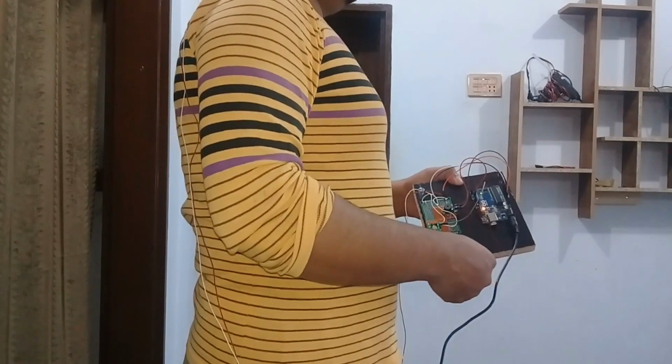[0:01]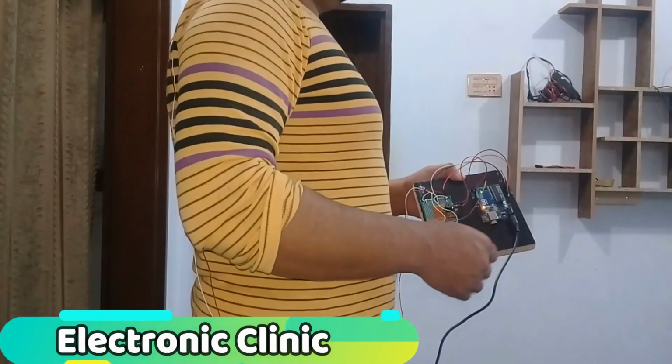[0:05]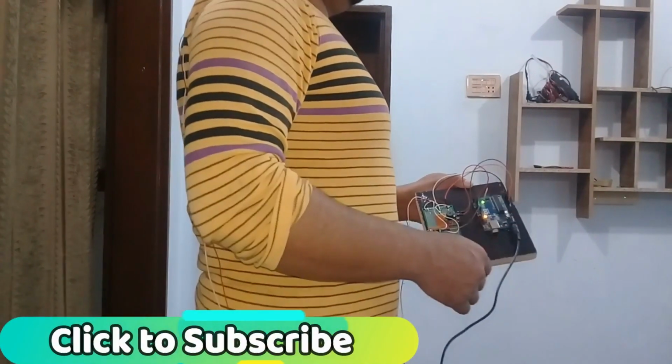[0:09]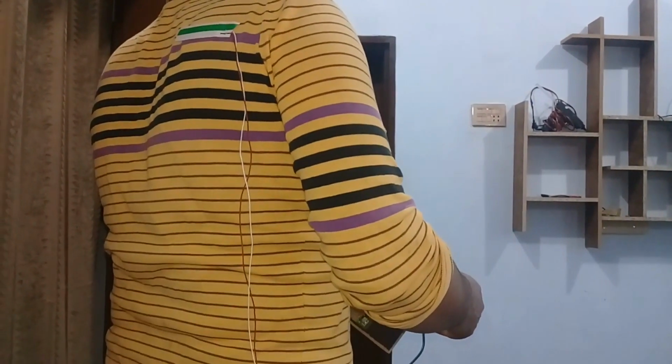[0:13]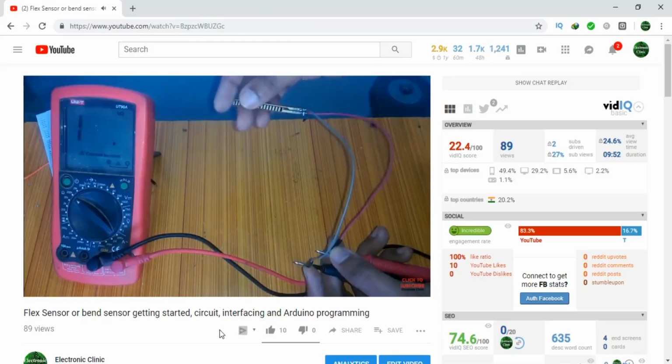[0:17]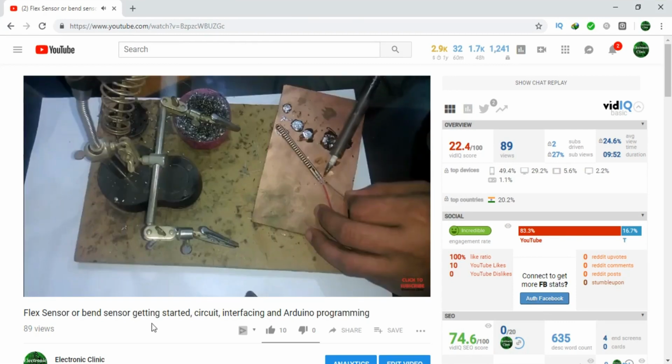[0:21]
Today's episode is about human posture monitoring using a flex sensor or bend sensor with Arduino. Before you watch this tutorial, I recommend you first watch my previous tutorial on flex sensor or bend sensor getting started. This tutorial completely explains all the basics related to a flex sensor. The link is given in the description.
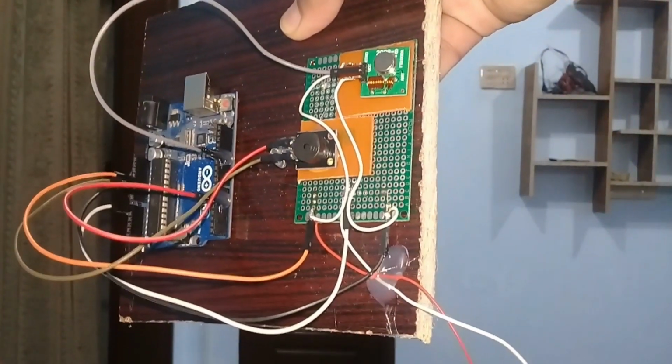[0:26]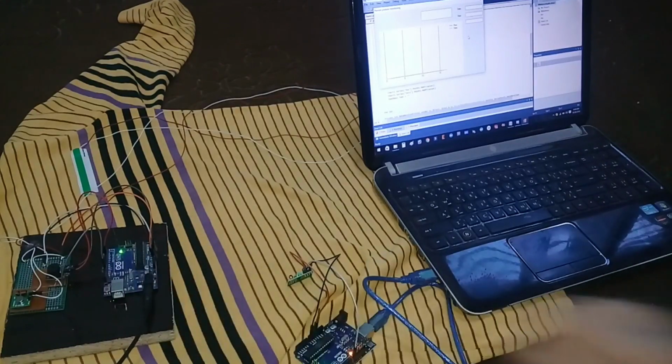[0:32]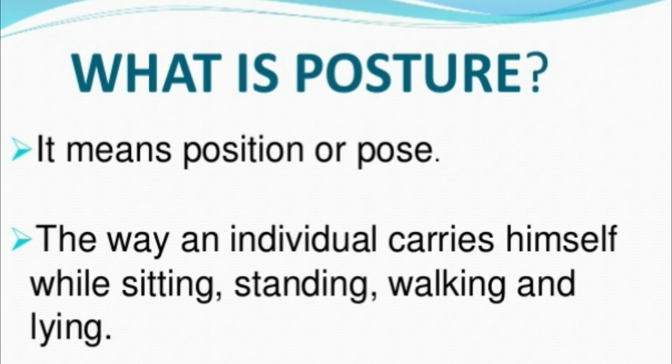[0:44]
As this is my first tutorial on human posture monitoring, I'm going to call this version 1. In version 2 of human posture monitoring, I will make use of wireless communication to send the posture data to a computer application where it can be displayed on a chart for post analysis. Let's get started. Let's start with a question.
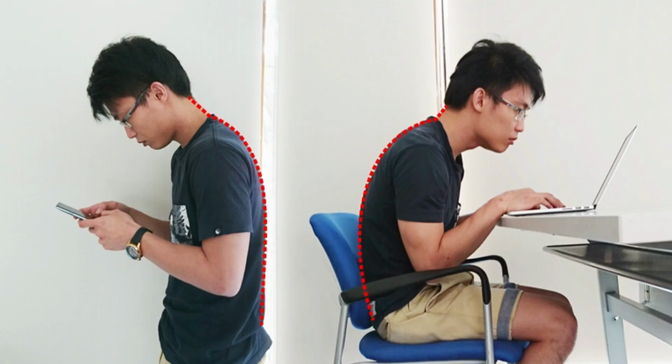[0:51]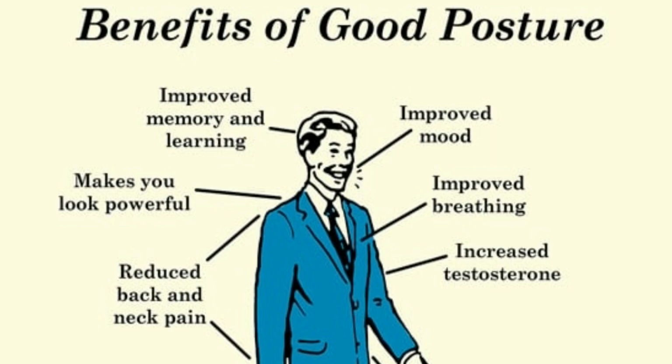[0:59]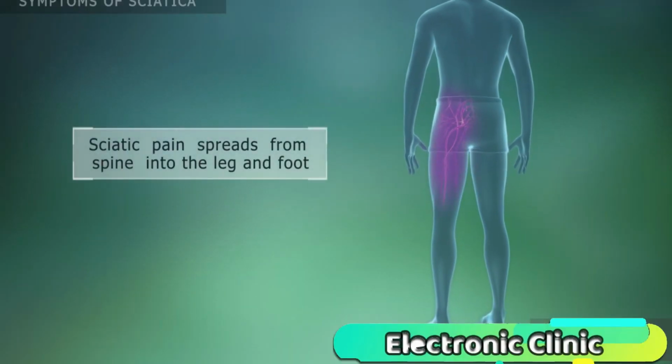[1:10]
What is posture? Posture is not a position but a dynamic pattern of reflexes, habits and adaptive responses to anything that resists you being more or less upright and functional. Forward head and flat back is a poor posture. Forward head, sway back and rounded shoulders is of course a poor posture. A poor posture soon results in sciatica problems.
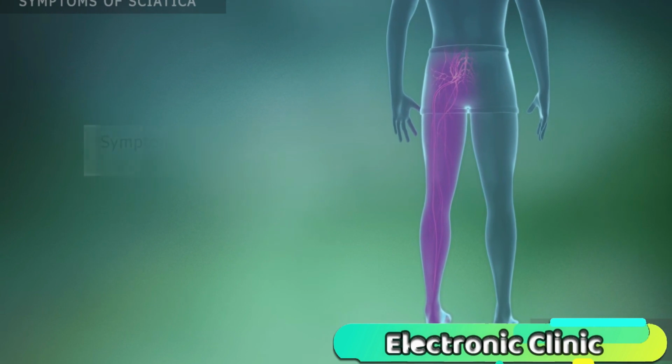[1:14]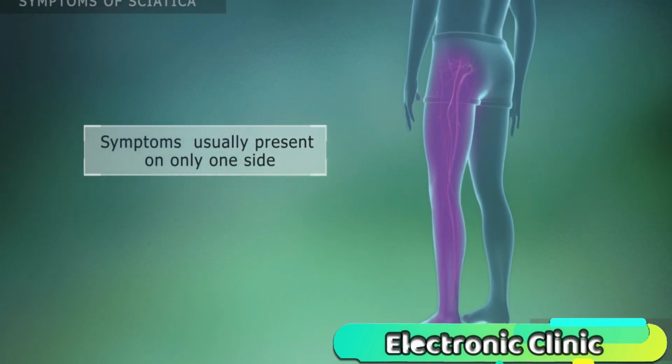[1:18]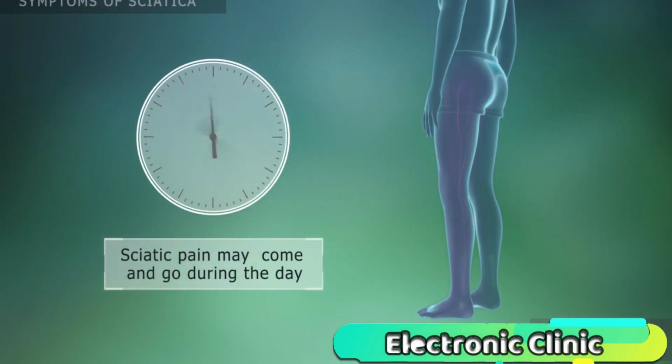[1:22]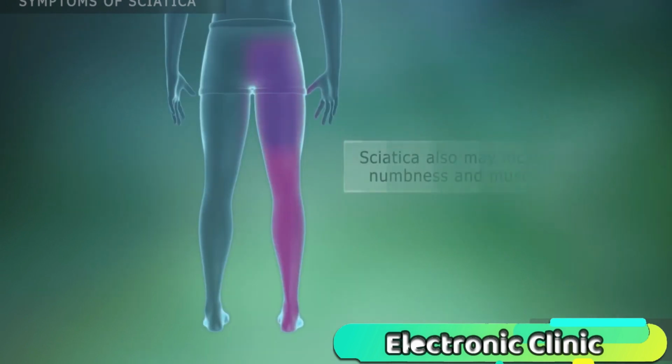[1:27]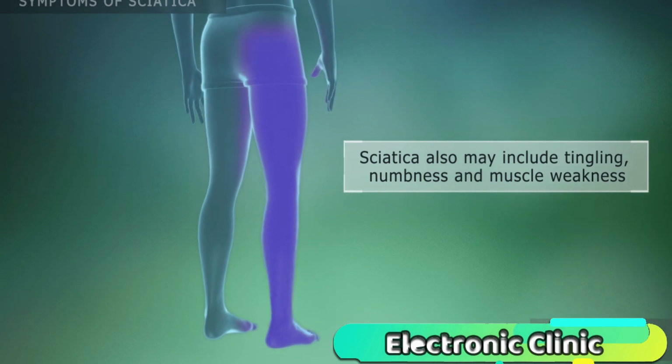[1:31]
Sciatica is a term that describes symptoms of pain, numbness and weakness that radiate along the sciatic nerve from the lower back to the buttocks and the leg. Most commonly, sciatica is caused by a disc problem such as a herniated disc that is pressing against a nerve root.
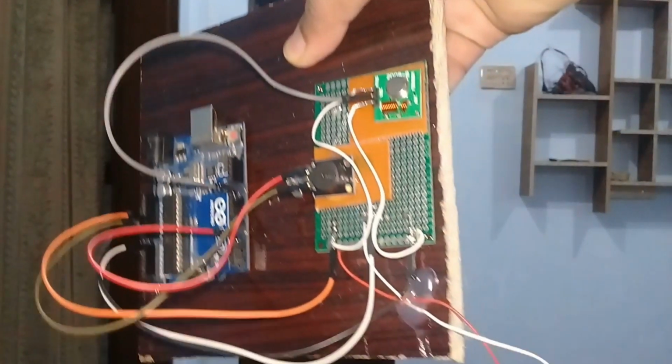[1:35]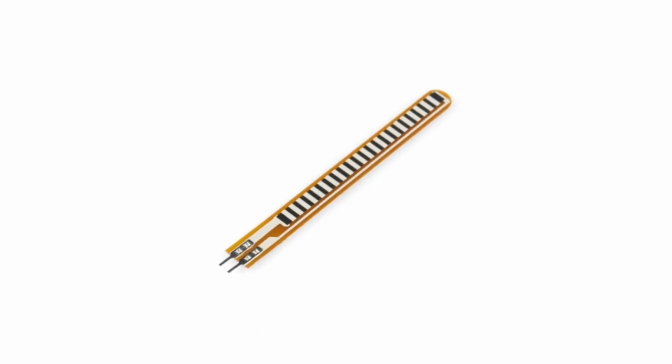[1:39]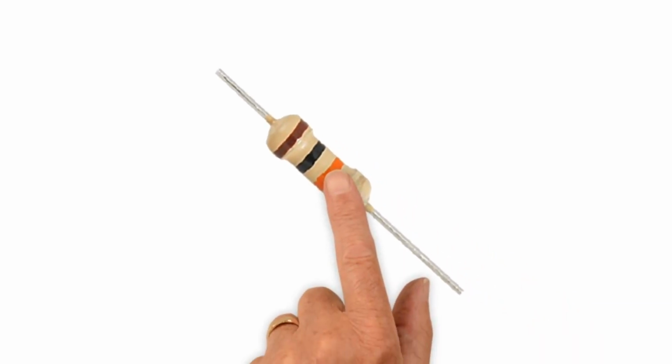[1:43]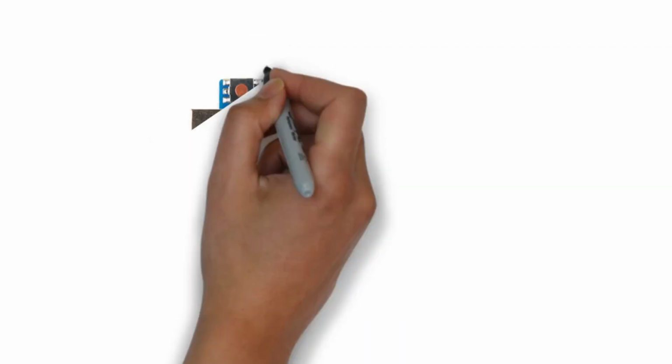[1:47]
The components that we will need for this project are number 1, flex sensor, number 2, 5 volt buzzer, number 3, 10K resistor, number 4, jumper wires, and finally number 5, Arduino. These components can be purchased from Amazon. The component purchase links are given in the description.
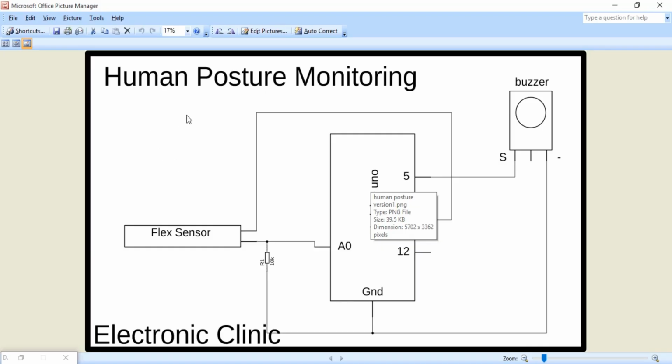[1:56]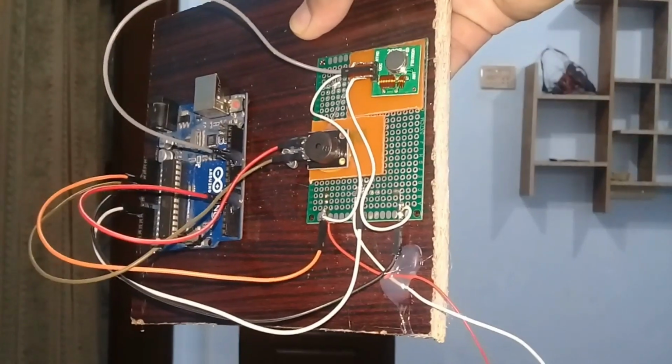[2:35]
The flex sensor connection with Arduino is exactly the same as explained in my previous tutorial. As you can see, a 10K resistor is connected in series with a flex sensor. 5 volts from Arduino is connected with the flex sensor and ground is connected with the 10K resistor. This flex sensor and 10K resistor make a voltage divider. A wire from the middle is connected with the analog pin A0 of the Arduino. The buzzer's S pin is connected with pin number 5 of the Arduino, which is a PWM pin, and the minus pin is connected with the ground. This is the final circuit.
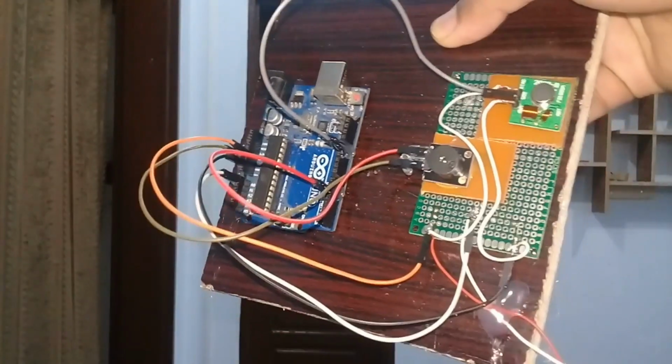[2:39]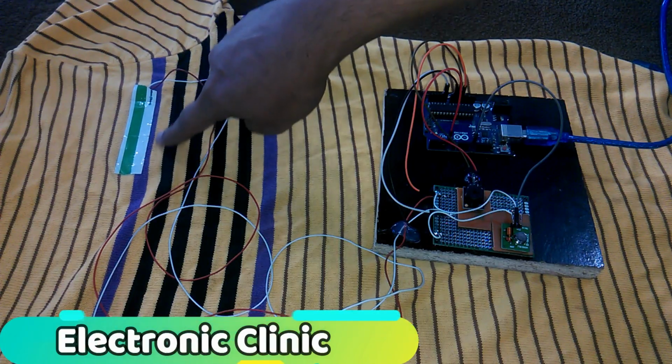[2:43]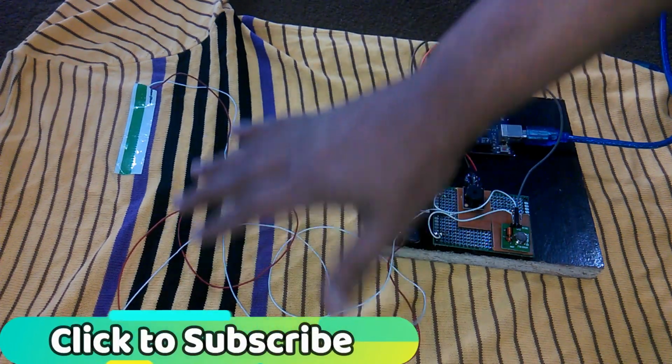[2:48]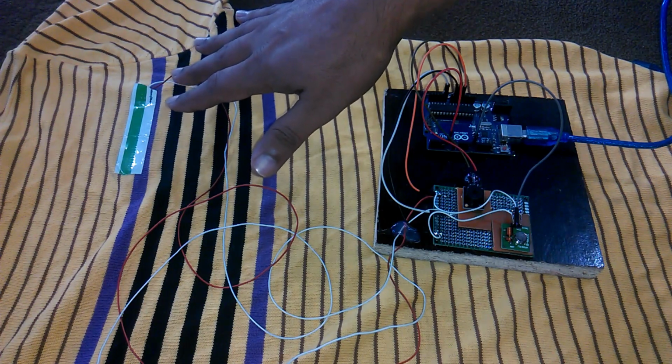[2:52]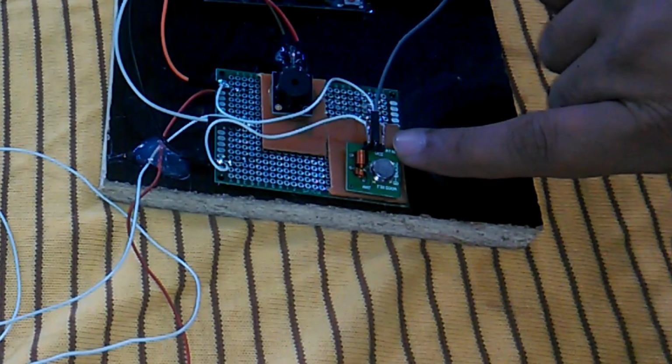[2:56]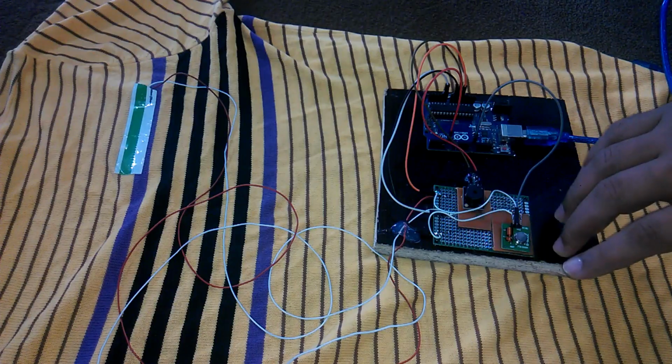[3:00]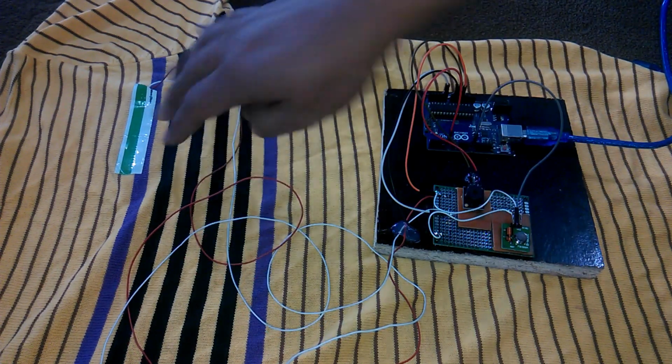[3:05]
I skipped the soldering part as I covered this in my previous tutorial. This is the same flex sensor, but this time I soldered longer wires and I used sticky tape to fix this flex sensor on the t-shirt. As you can see, I have also connected a radio frequency RF transmitter module. I will explain this in version 2. In version 1 of human posture monitoring, we will be using only the flex sensor and a buzzer.
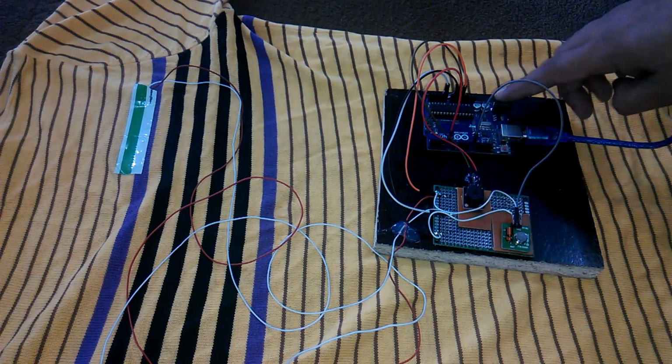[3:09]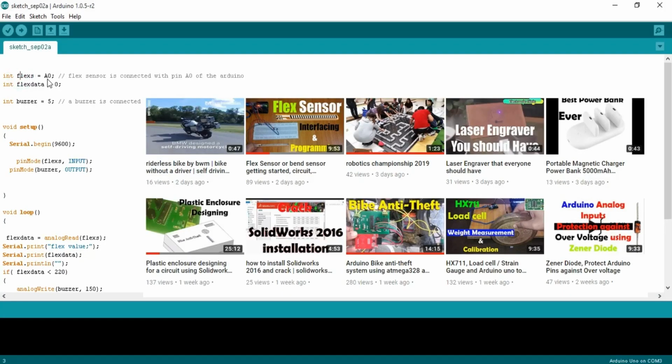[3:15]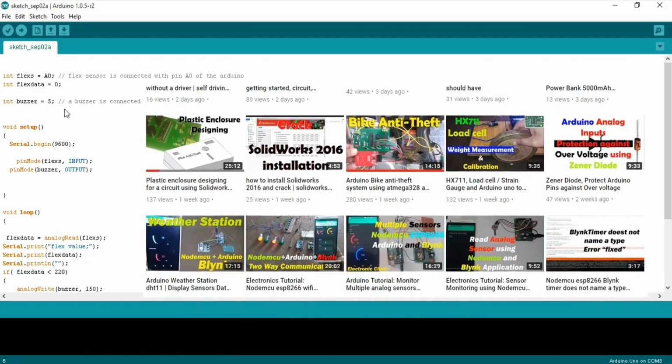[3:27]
The whole circuit can be powered up using a 9 volt battery, but I will be using a 12 volt adapter for the testing. Integer flex is equal to A0. The flex sensor is connected with pin A0 of the Arduino. Integer flex data is equal to 0. Integer buzzer is equal to 5. A buzzer is connected with pin 5 of Arduino, which is a PWM pin.
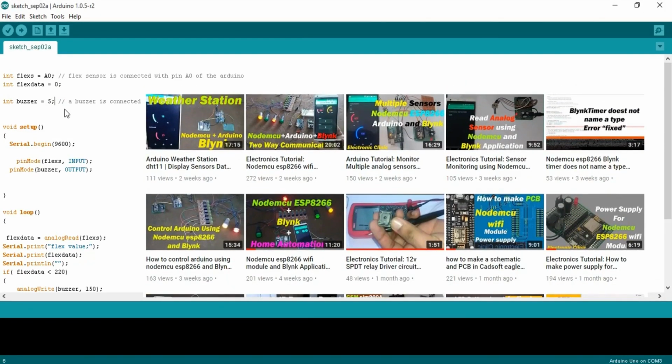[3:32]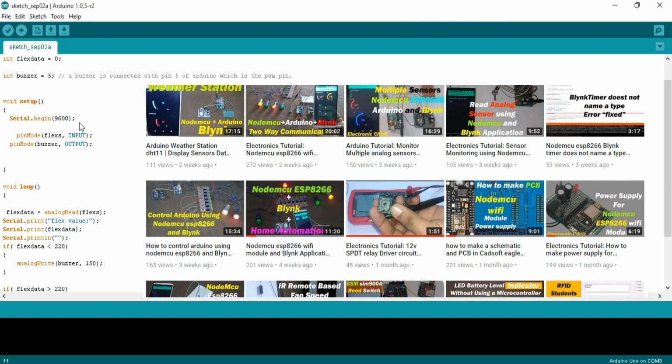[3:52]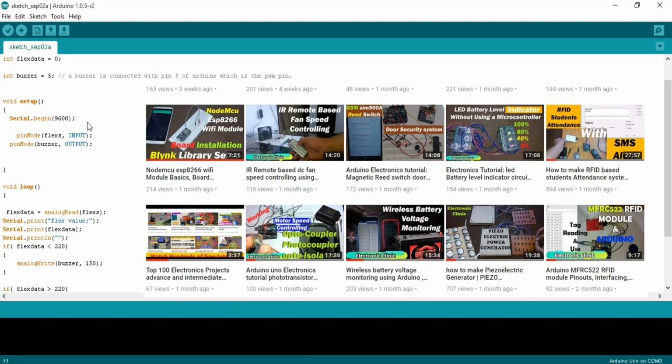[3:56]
As you know, my friends, every Arduino program has at least two functions, which are the void setup and void loop functions. Void means that this function is not returning any value, and the empty parentheses mean that this function is not taking any arguments as input. Serial.begin 9600 activates the serial communication at the baud rate of 9600. This is the communication speed in bits per second. This will be used for debugging purposes.
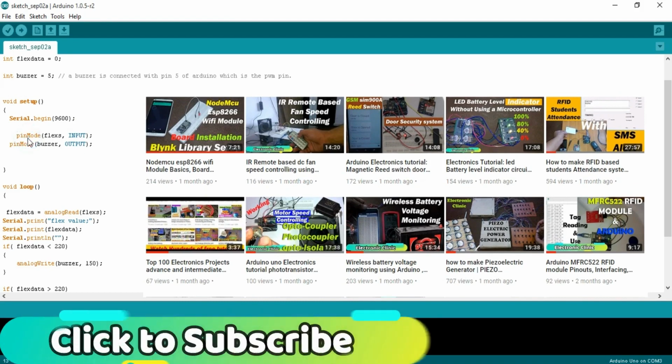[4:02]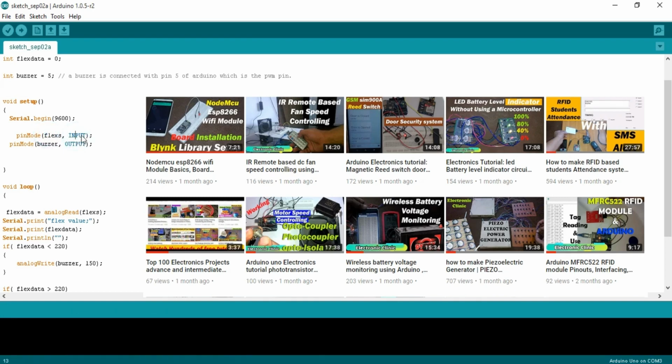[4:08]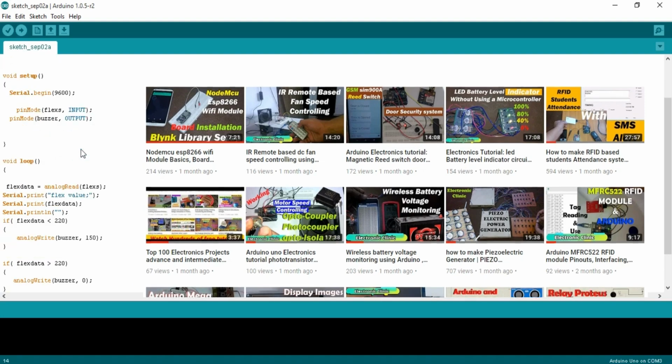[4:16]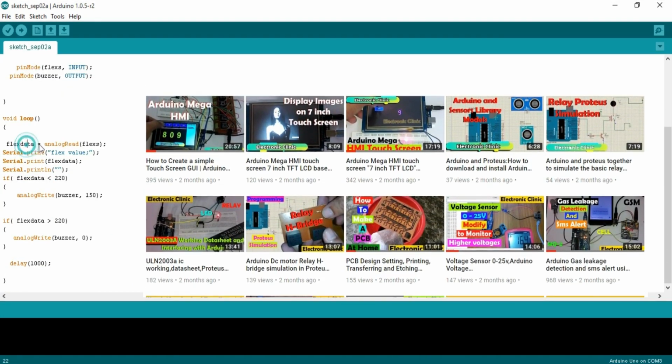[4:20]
pinMode is a function and it takes two arguments as input, the pin number or pin name, and the status which can be input or output. As this is a sensor, that's why I set it to input and the buzzer is set to output. Then starts the void loop function. flexData is equal to analogRead(flex). This instruction simply reads the analog pin A0 and stores the value in the variable flexData.
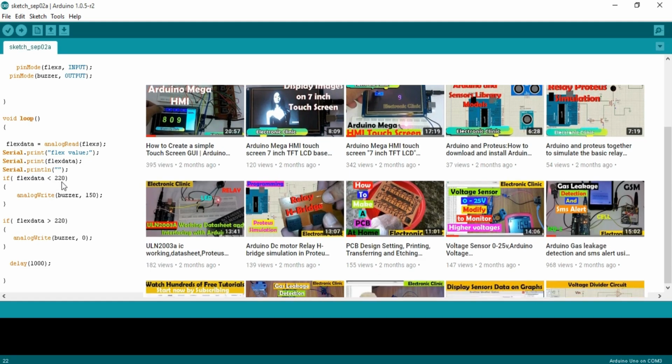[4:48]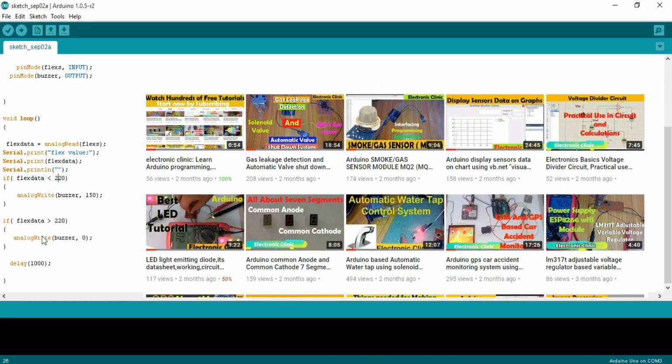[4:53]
These instructions are used to send the flex sensor values to the serial monitor. For a good posture, the value of the flex sensor is greater than 220, which I will tell you during the testing how to find this value. While for a bad or poor posture, the value drops below 220, so these two conditions are used to check whether you are in a good posture or bad posture. So if the value is less than 220, it means poor posture, so the buzzer will turn on.
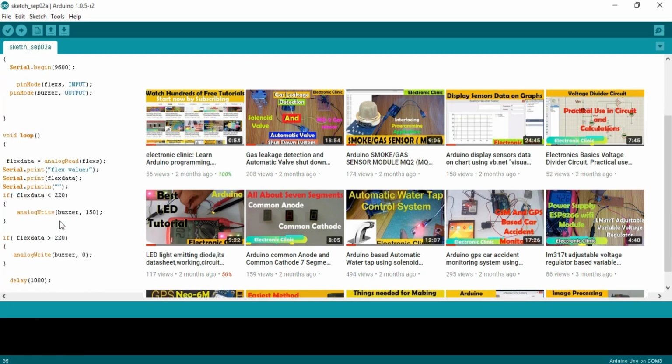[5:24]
To control this buzzer, we use the analogWrite function. If the value is greater than 220, it means good posture, so the buzzer is turned off, and then there is a delay of 1000 milliseconds, which is equal to 1 second. So that's it. I have already uploaded this program, and let me show you how to select these values.
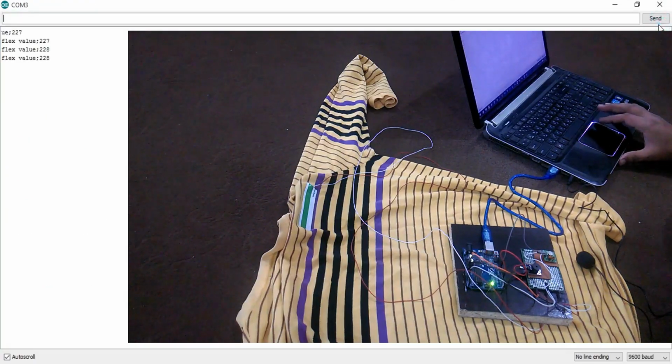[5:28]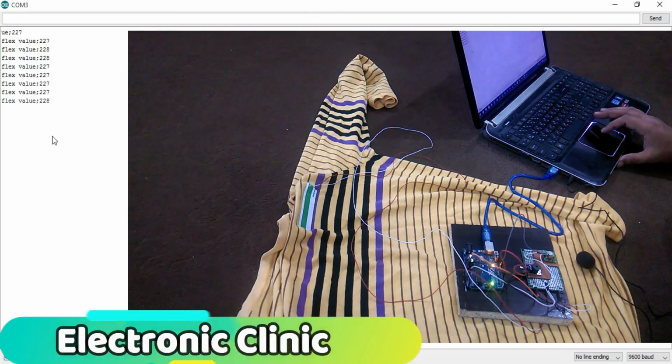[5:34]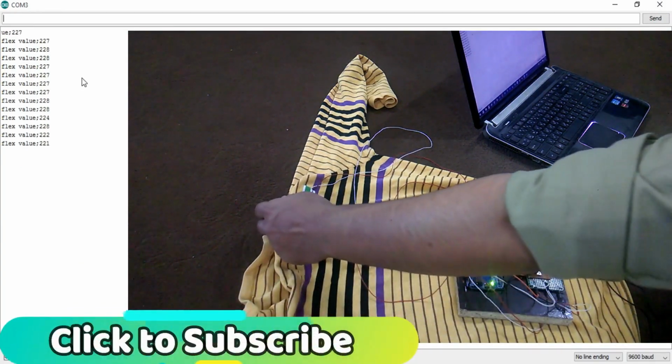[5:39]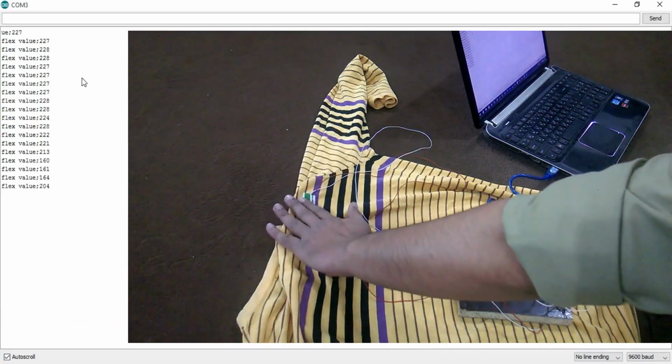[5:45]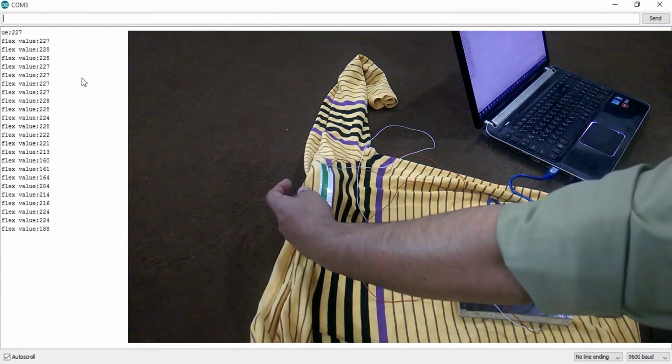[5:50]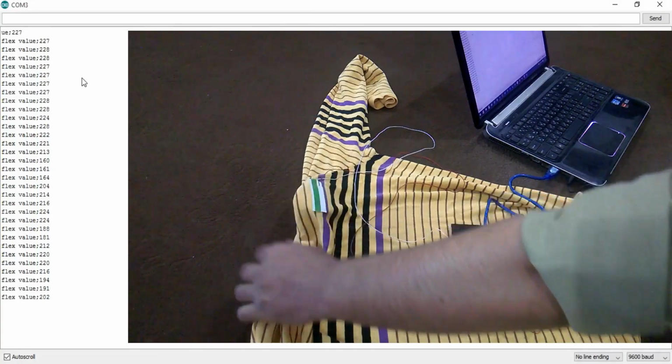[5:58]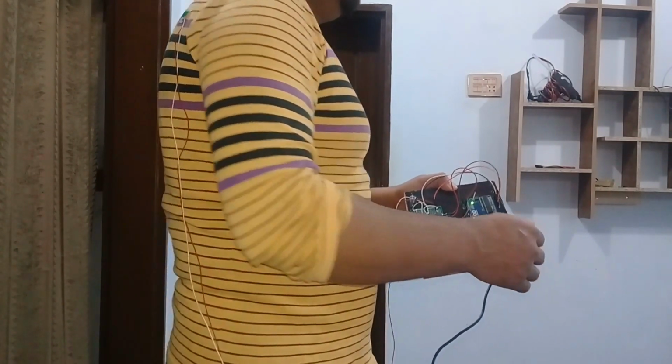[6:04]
Open serial monitor. As you can see, when the sensor is flat, the value is greater than 220. And when I bend the sensor, the value decreases below 220. So that's how I selected these values and further confirmed these values by wearing this t-shirt. Let me wear this t-shirt and watch this project in action. This way we can easily monitor the posture.
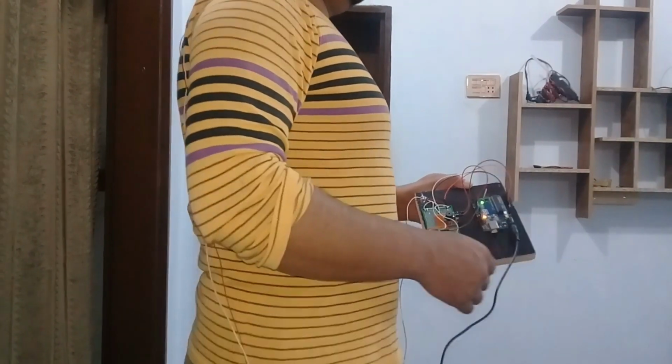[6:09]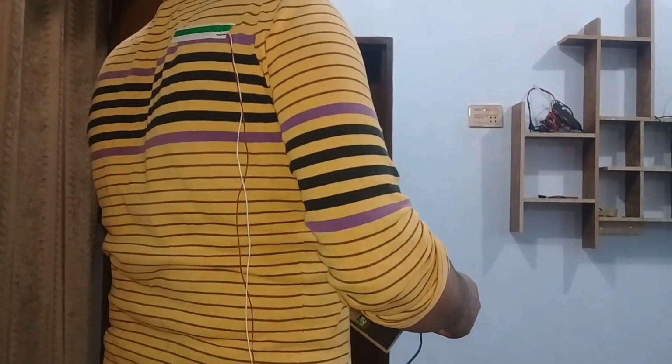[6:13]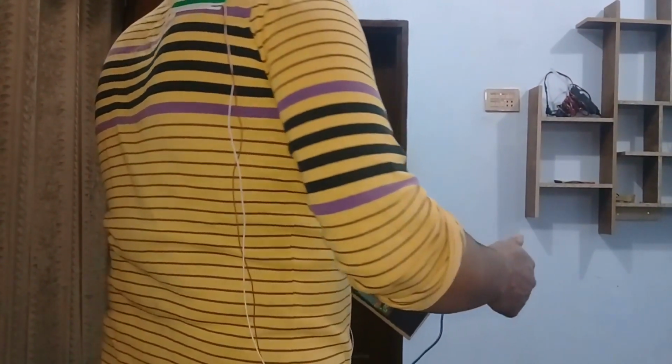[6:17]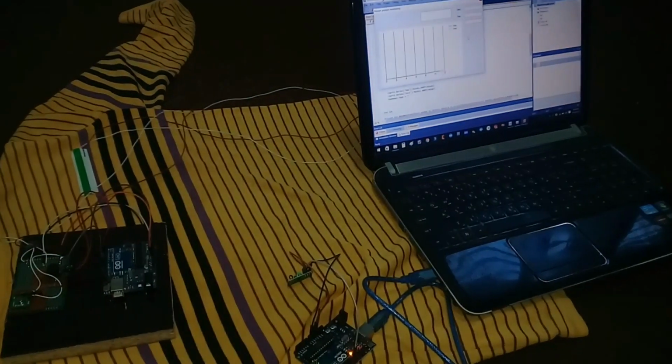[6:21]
This project can be further modified by adding one or two more flex sensors. In version 2, I will make it wireless so that the posture can be monitored on a computer or laptop screen.